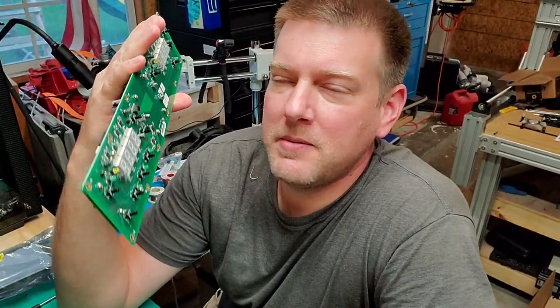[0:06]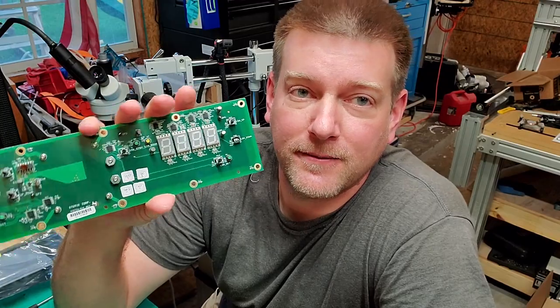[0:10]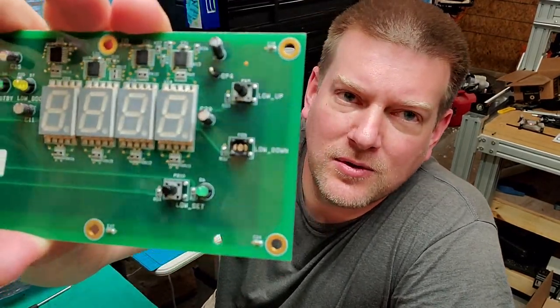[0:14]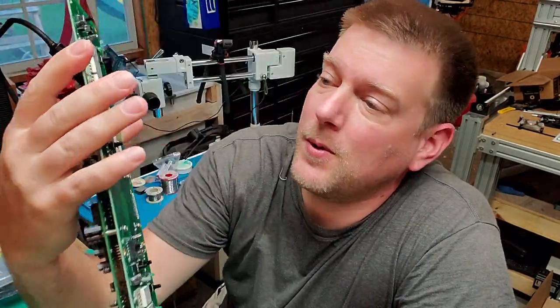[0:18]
I found a board in the bottom of a box. Unfortunately, it's had kind of a hard life. It's brand new, but it's had a hard life. See those little buttons right there? A couple of them are damaged. So, we're gonna go ahead and fix that.
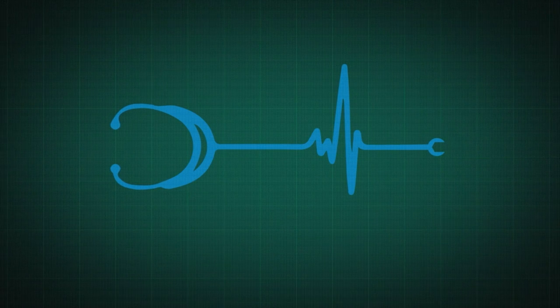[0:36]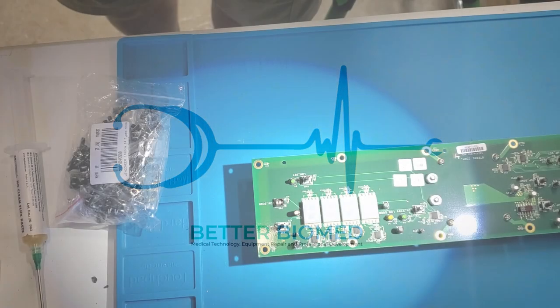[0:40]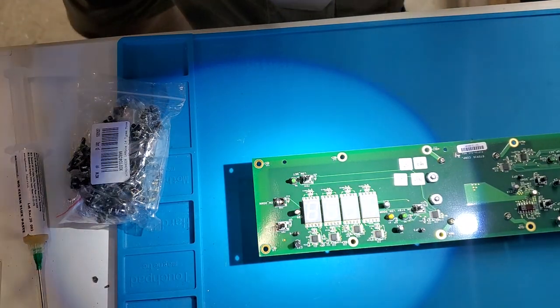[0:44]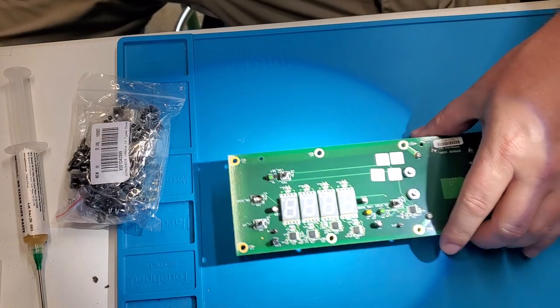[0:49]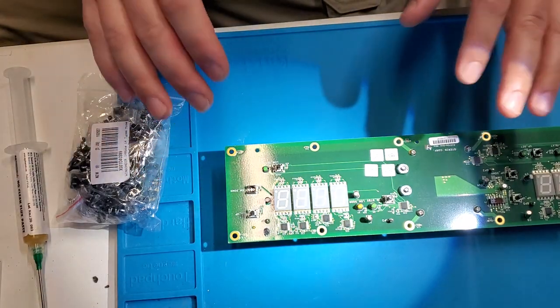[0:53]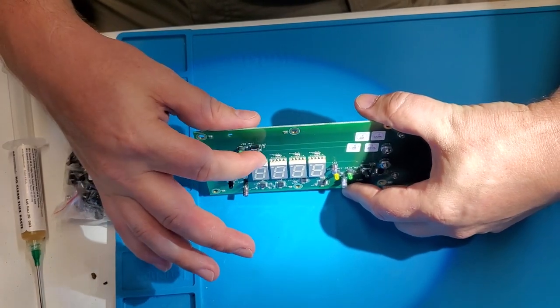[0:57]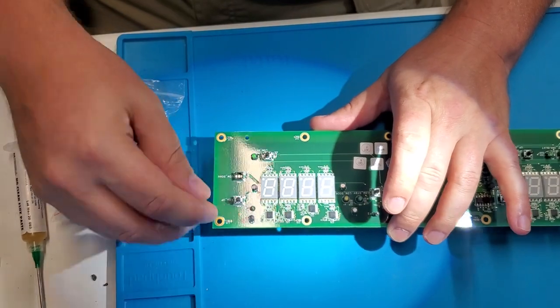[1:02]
Hey everyone, welcome back to Better Biomed. Today I'm going to go ahead and show you guys how to change out some buttons on a circuit board, because these buttons tend to get damaged all the time. There's a whole variety of different ones that you'll find on circuit boards. These ones here have a raised pedestal. It's basically your activation button. It makes them super, super gentle.
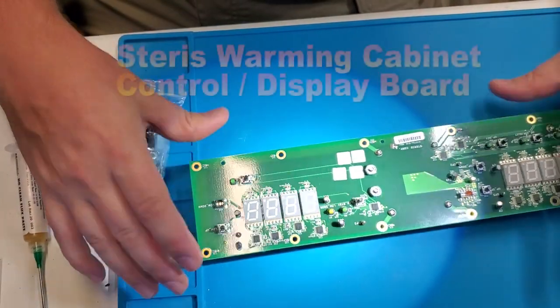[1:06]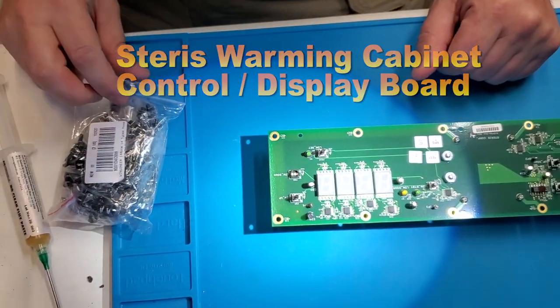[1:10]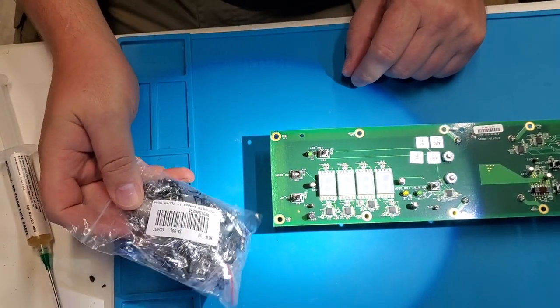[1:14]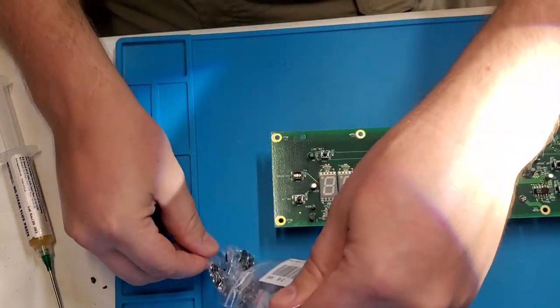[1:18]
This one was damaged in the package, brand new, and this is about a $1,000 board, and I just can't let that go. So I was able to find replacement parts off of Amazon, and I do believe that these are only $7 or $8, and it is like 140 pieces.
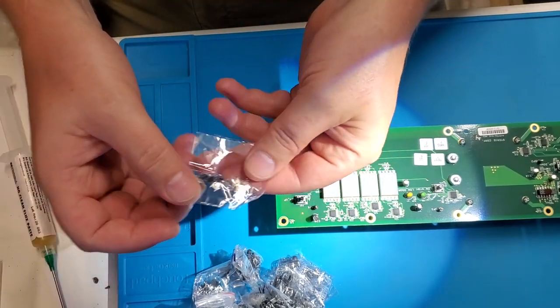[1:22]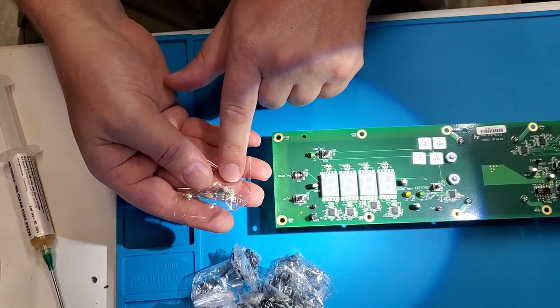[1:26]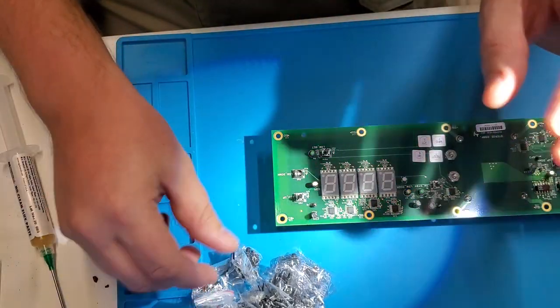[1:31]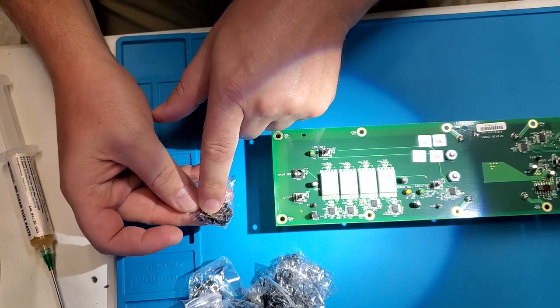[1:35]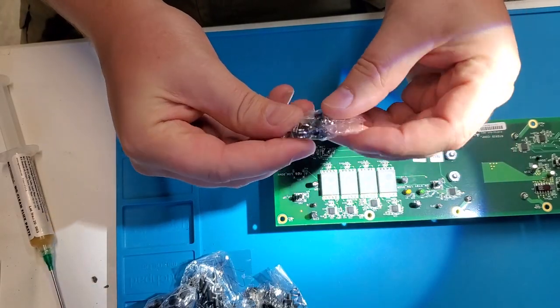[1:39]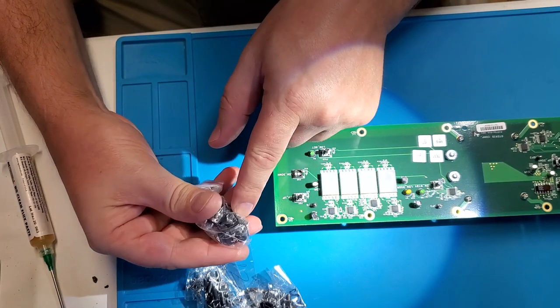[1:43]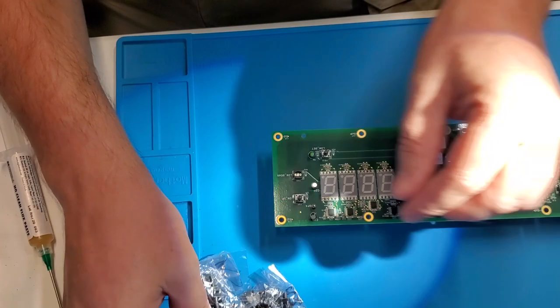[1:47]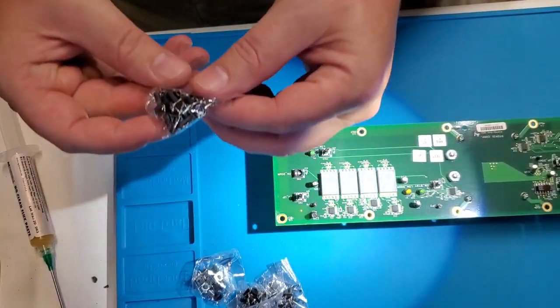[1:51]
The cool thing about this is we have a variety of different buttons. Some of these are the typical ones that you see on medical equipment. They're the flat with just a tiny, tiny raised portion. There's the low rise buttons. We've got some more low rise buttons. I've got some larger ones. We do see these as power buttons on some PCBs. Some more low-rise buttons. Probably quite a few of those.
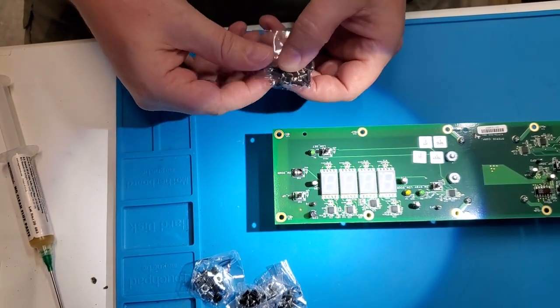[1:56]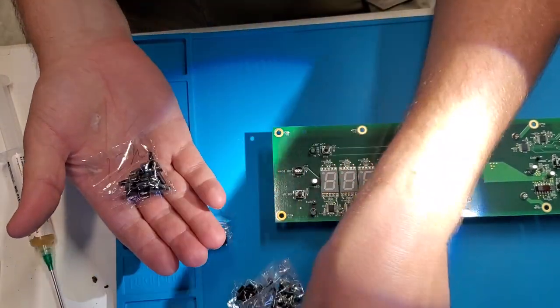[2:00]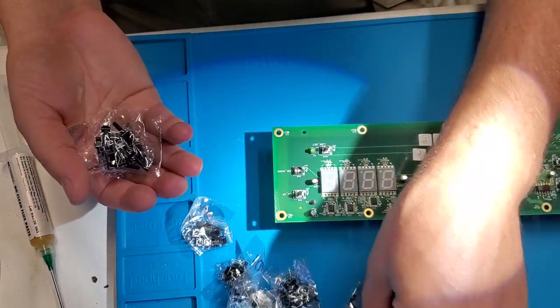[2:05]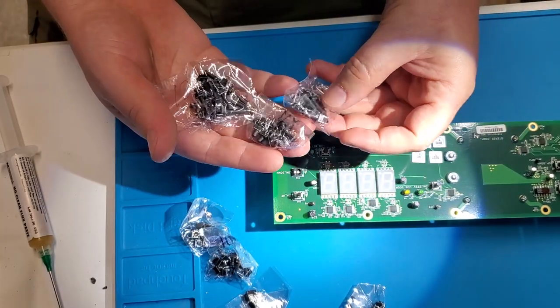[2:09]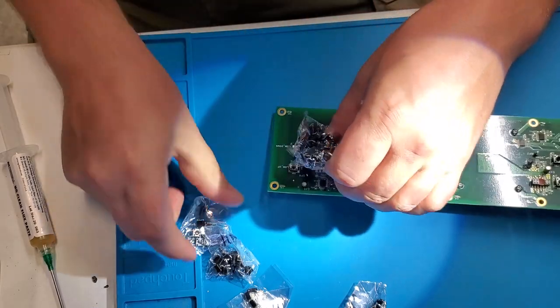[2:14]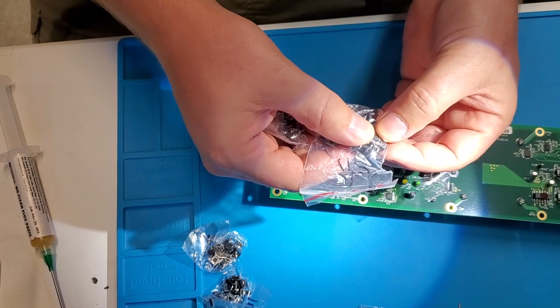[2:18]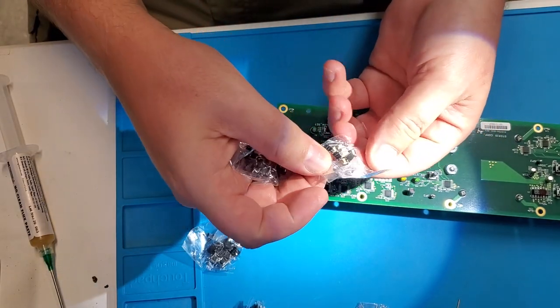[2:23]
All right, this is what I'm talking about. This looks a little closer to what I'm after. So this kit also comes with different lengths of button. Let's see, those ones are too short. Those ones are pretty long. I think it's the first one. I think it's this one. Well, let's go ahead and take a look. Those ones are pretty cool. And then these ones, I have actually seen these go bad on PCBs before. Look at those little squares.
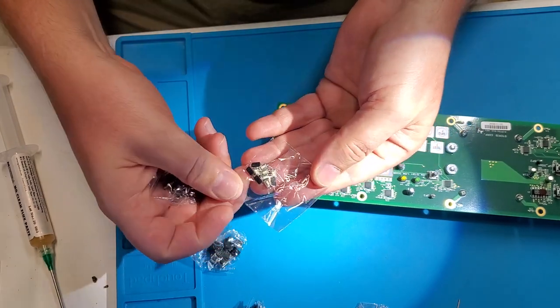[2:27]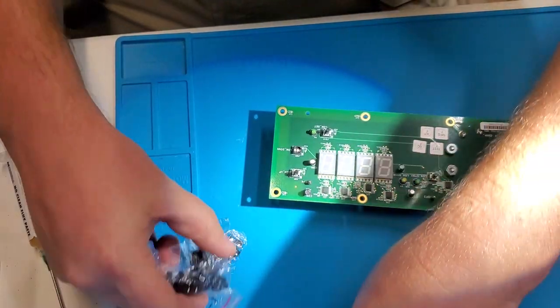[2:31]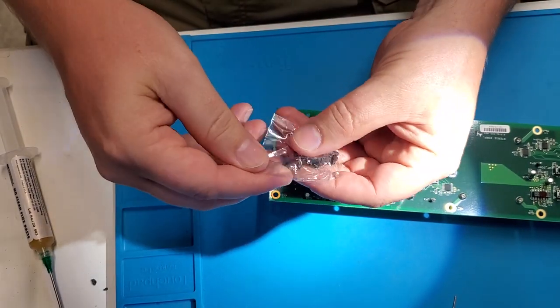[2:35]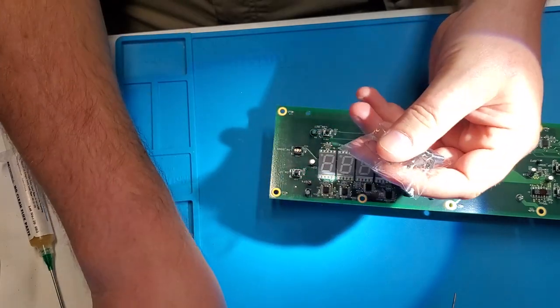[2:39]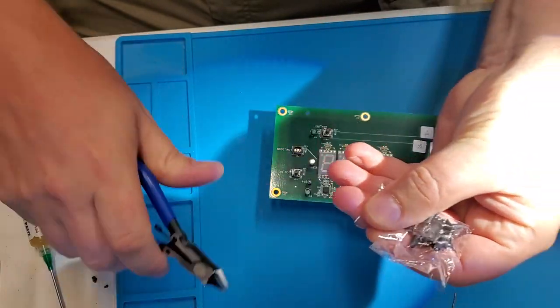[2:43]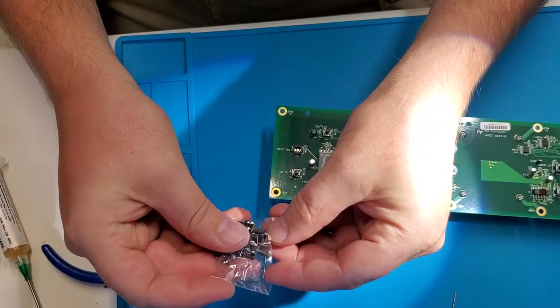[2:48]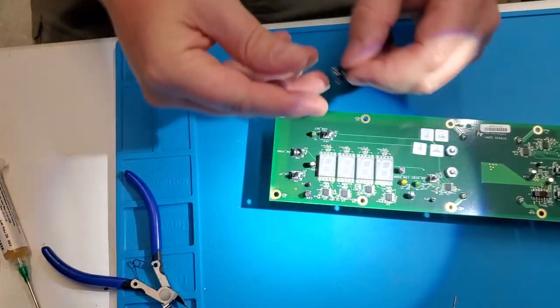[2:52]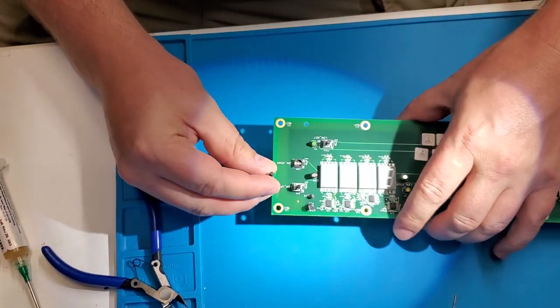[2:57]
Even if you just keep these in your parts inventory for what-ifs type of situations, I can't tell you how many times I have seen buttons go bad on PCBs, and they are actually very fixable. And I'm going to show you guys how to do that.
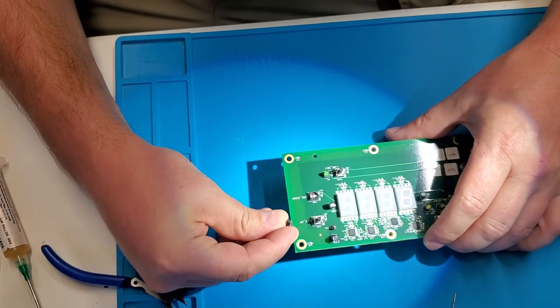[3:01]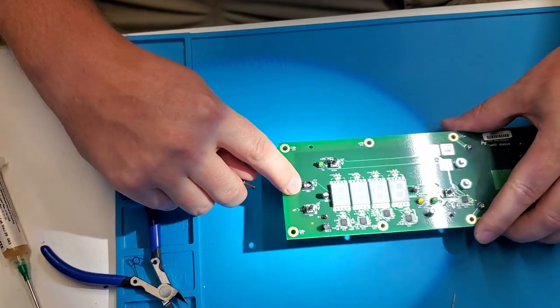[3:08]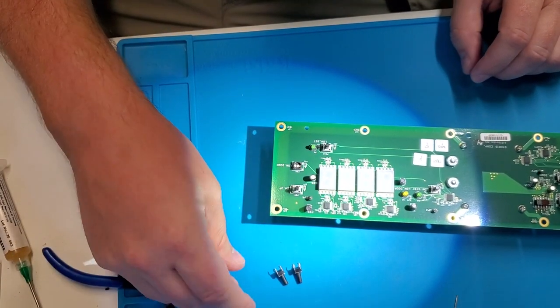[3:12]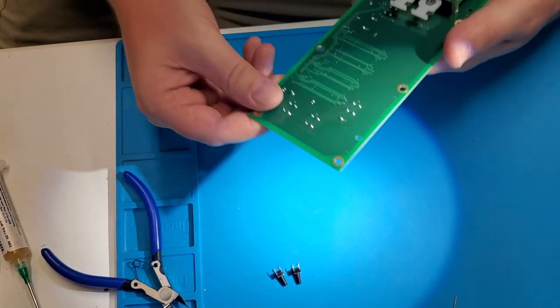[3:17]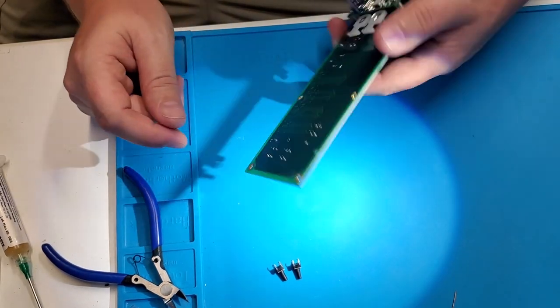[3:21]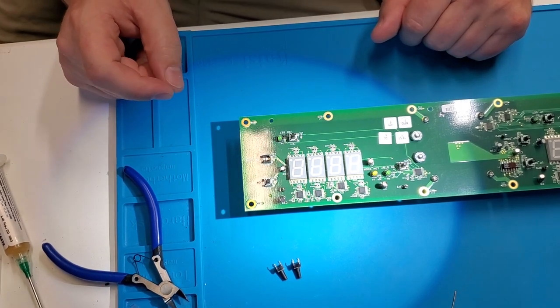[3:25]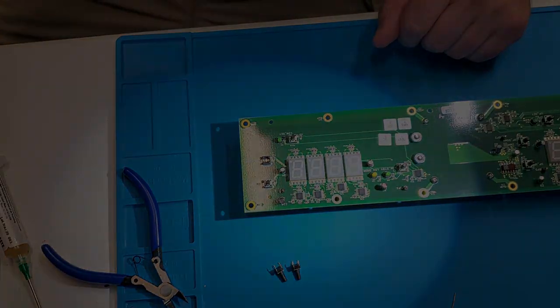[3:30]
So let's see, this one. That looks like it's it. Look at that. Excellent. Okay, so I need two of them. I need one for this guy, and I need one for this guy right here. There's one, there's two. So some of the things that you'll notice is that these ones are through hole. So we'll have to actually desolder these. And in doing so, I'm gonna have to add some solder and we'll go from there. So let's go ahead and turn the soldering iron on and get started.
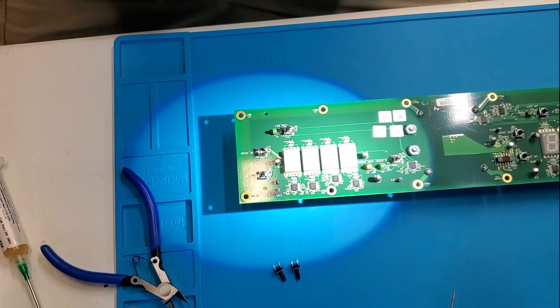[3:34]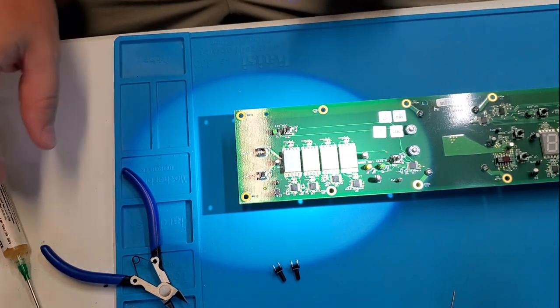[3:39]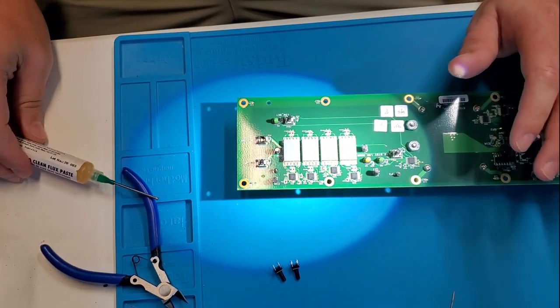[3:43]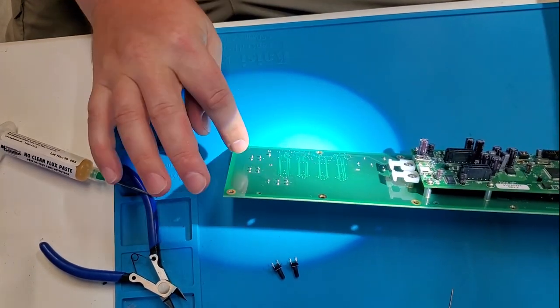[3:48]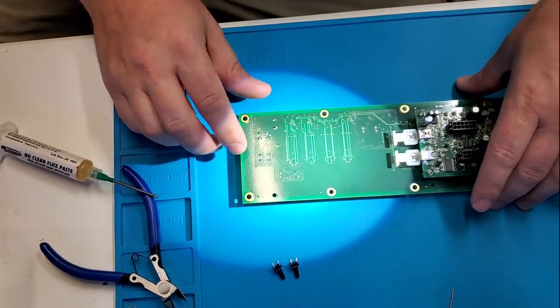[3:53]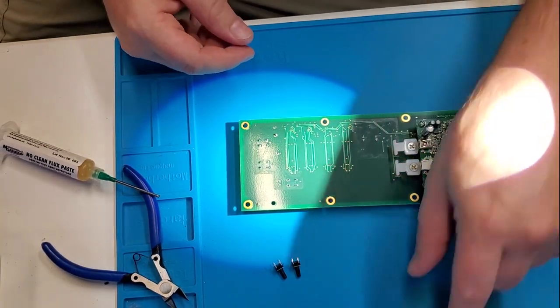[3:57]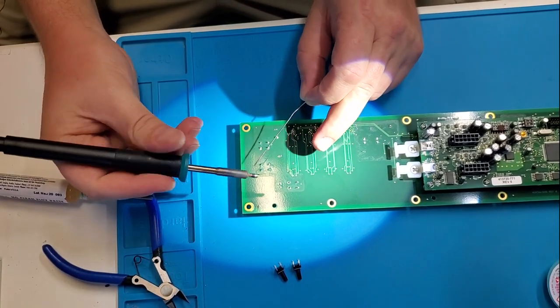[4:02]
Okay, the absolute first thing that I'm gonna do is I'm gonna go ahead and desolder these buttons. I've got my soldering iron all heated up. In order to desolder these, we're going to have to add some solder to it. A lot of these are wave soldered, and that means they use absolute minimum solder on the board. So I'm going to go ahead and flip it over. I have access to the two. It's going to be this one and this one. And we're going to add just a little bit of solder to the back. And then I'm going to be able to wick it back off. Let's do it.
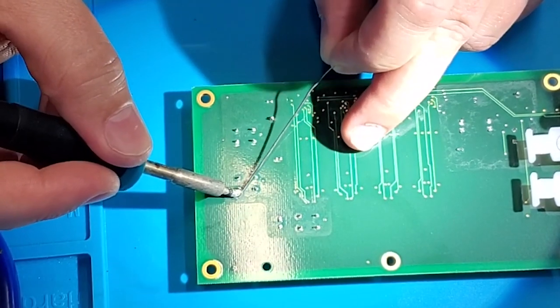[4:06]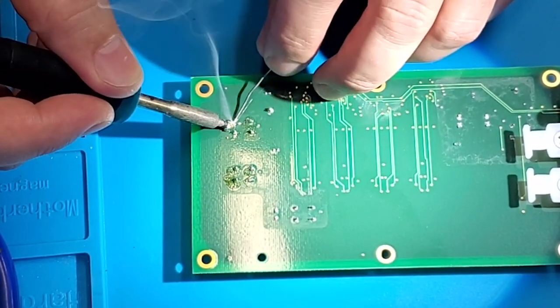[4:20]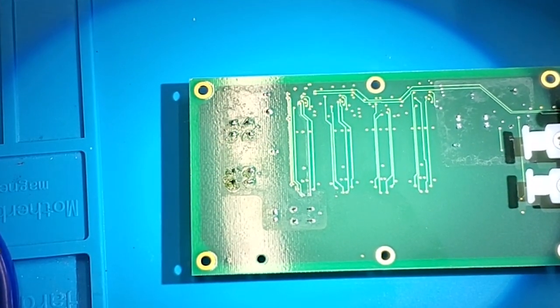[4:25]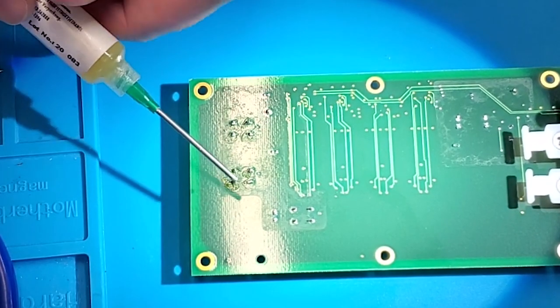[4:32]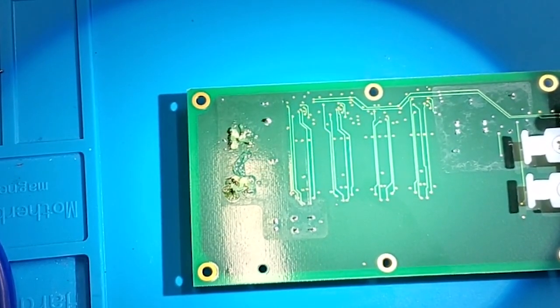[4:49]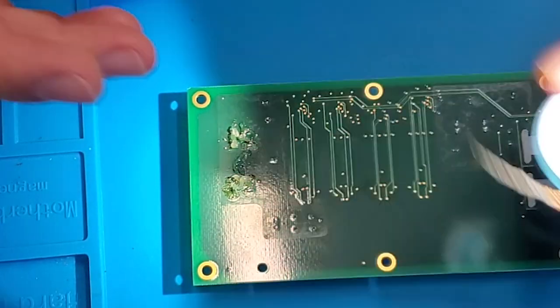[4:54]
Adding solder to the joints also acts as a preheater for the joint. All right, next. I'm going to go ahead and put some flux down here. All right, that's a good amount of flux. And I've got my solder wick ready. I'm gonna use the thicker braid solder wick, stuff right here.
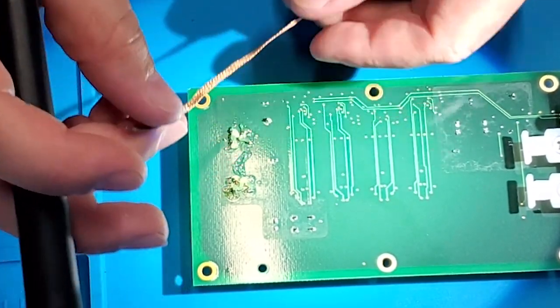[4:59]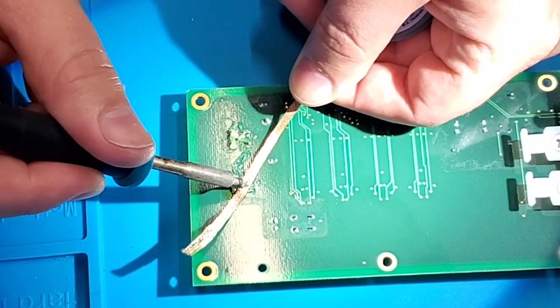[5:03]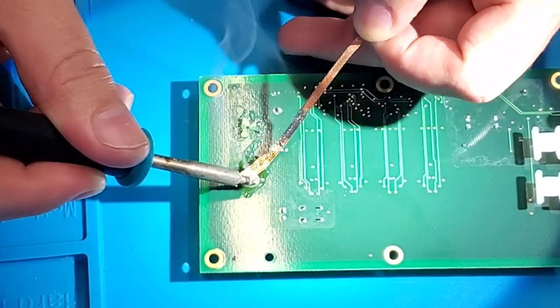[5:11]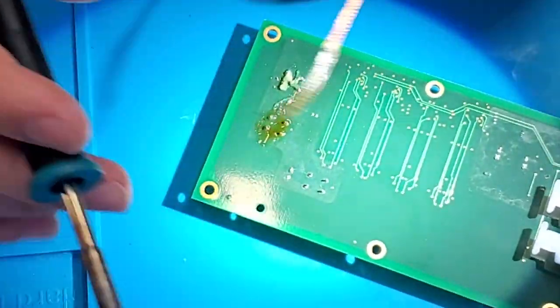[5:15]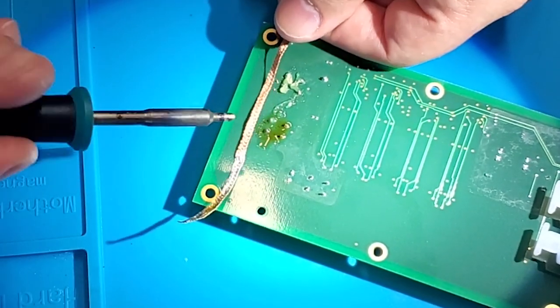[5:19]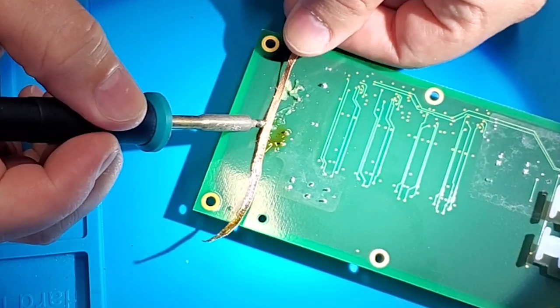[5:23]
And I'm gonna lay it right down next to the joints, heated up with the iron. You can see, oh, look at it bleeding out real quick. That's the beauty of using lots of flux with solder wicking. Look at that. Got those ones already cleaned up. So all I'm doing is I'm placing the solder wick down next to the joints, kind of touching the iron up next to it, and you can see my technique is to pull the solder wick towards me.
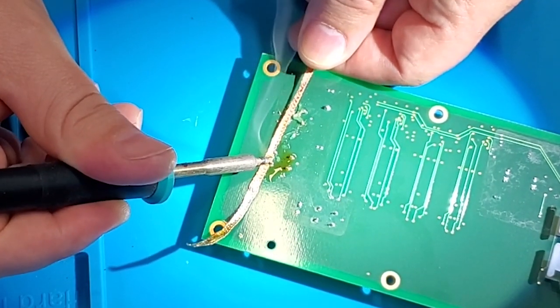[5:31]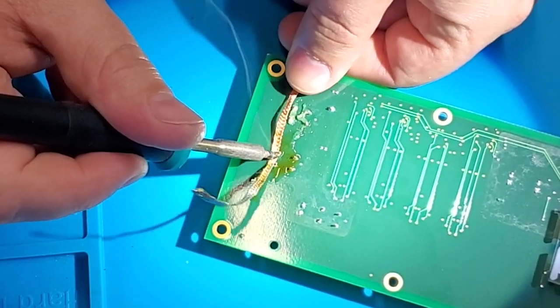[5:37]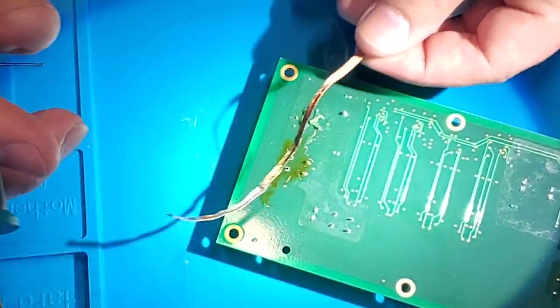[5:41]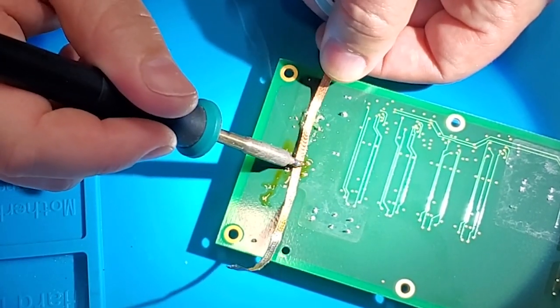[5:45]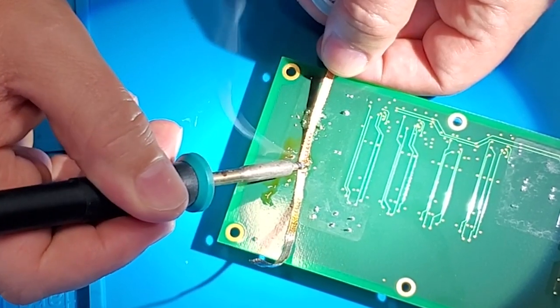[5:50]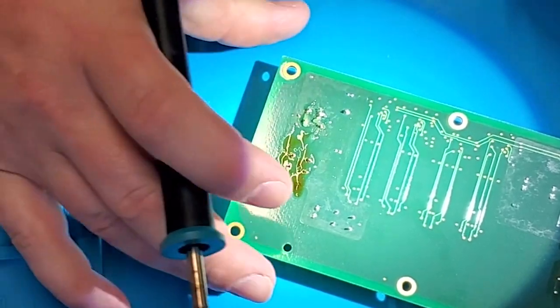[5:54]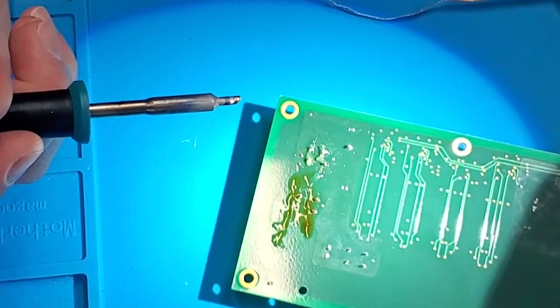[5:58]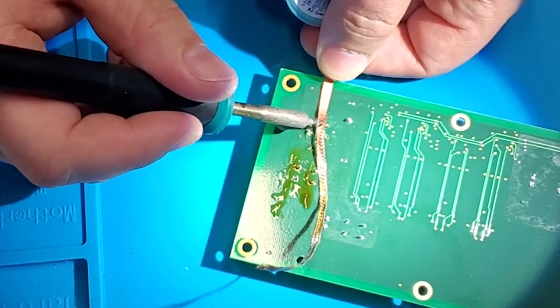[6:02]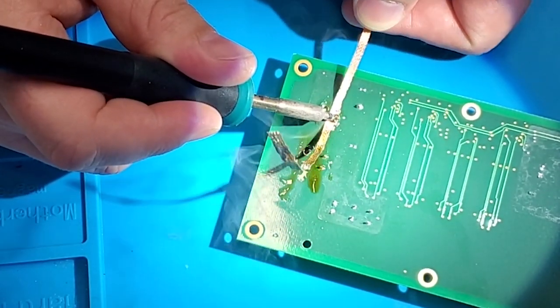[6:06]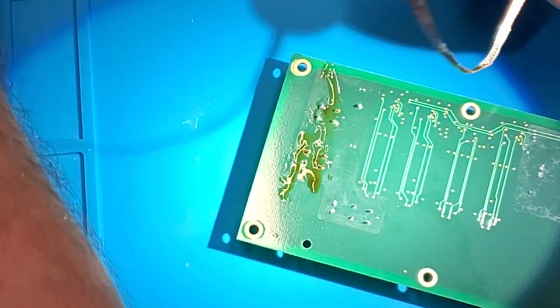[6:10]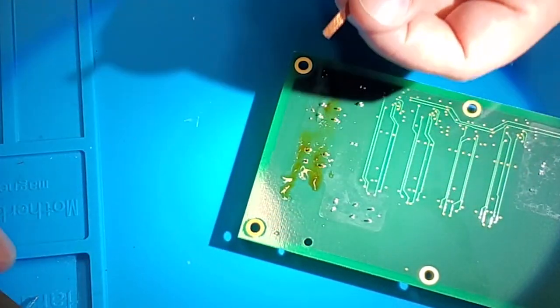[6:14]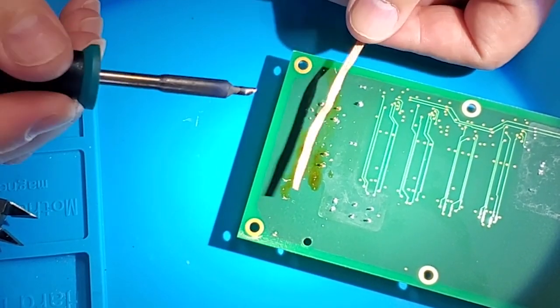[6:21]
That's how we do it. All right, those look like some pretty clean joints. Here we go. That's looking really good. How clean that comes out, nice and easy. And once you've used up your solder wick, you just clip it, start anew. There we go.
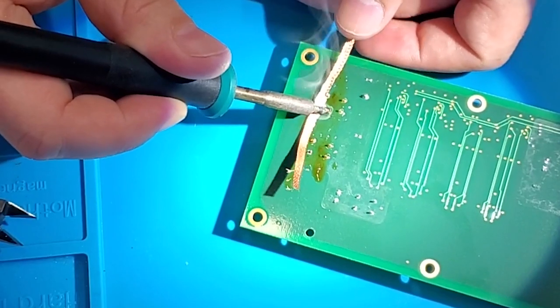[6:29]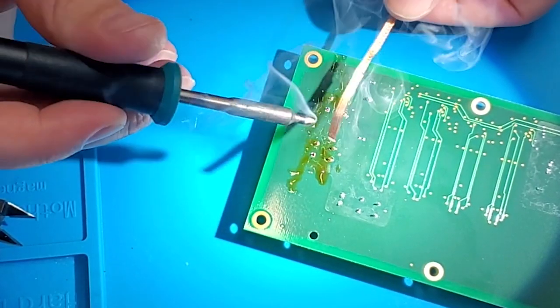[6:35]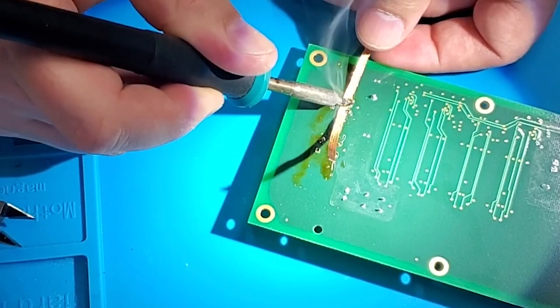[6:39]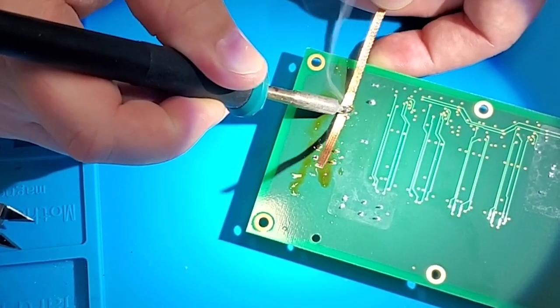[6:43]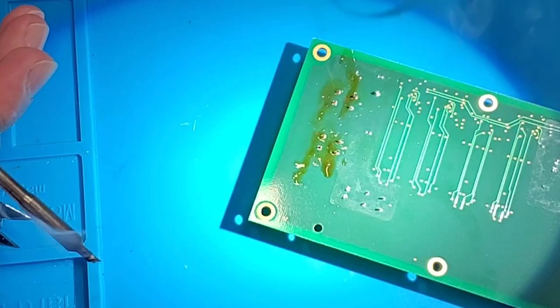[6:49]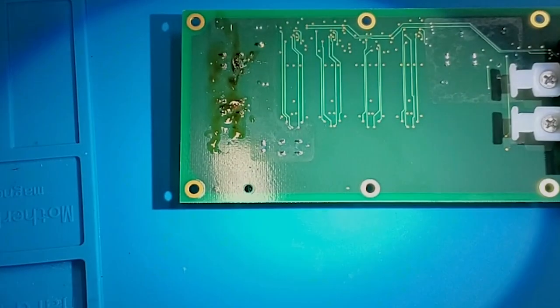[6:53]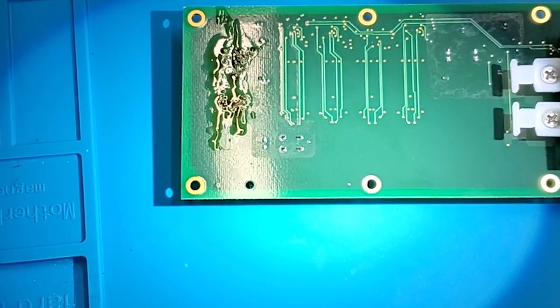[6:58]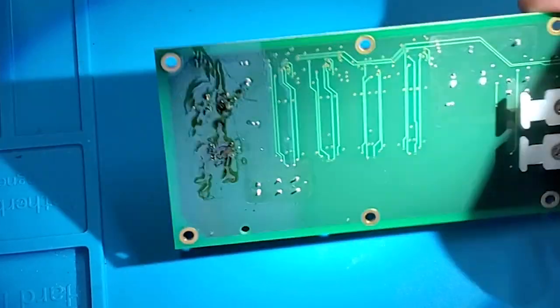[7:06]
These joints are looking really clean. So now I got most all the solder out of there, I'm going to do just one thing. I'm going to heat it up with my hot air station and just get the backs of these joints so I know that they come out nice and clean, and it should just pop right off.
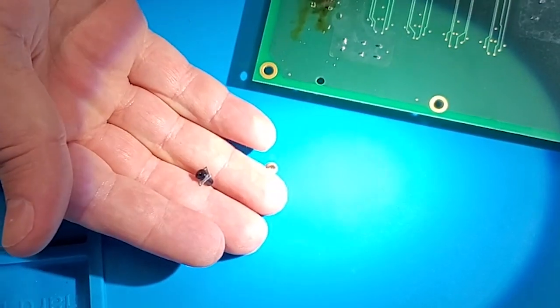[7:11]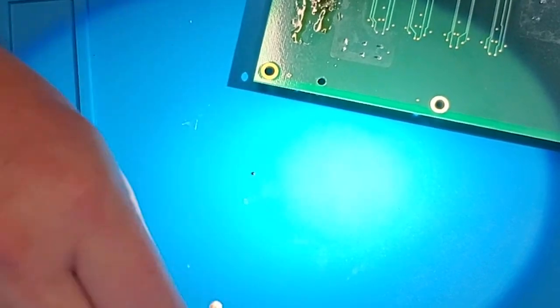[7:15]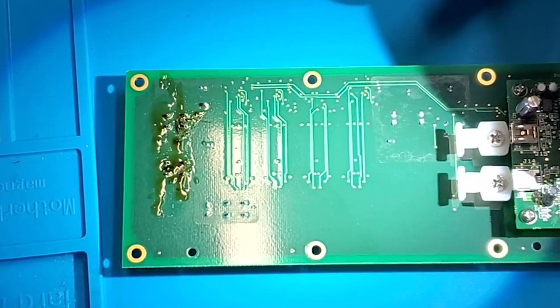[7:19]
You can see my buttons are disintegrating. That's not due to the heat from the iron, that's actually because I had kind of put that button back together by hand. It was absolute garbage, so that's why I'm changing them out.
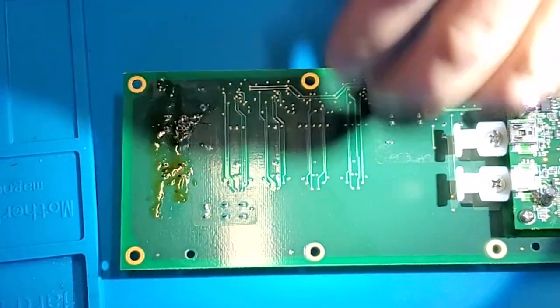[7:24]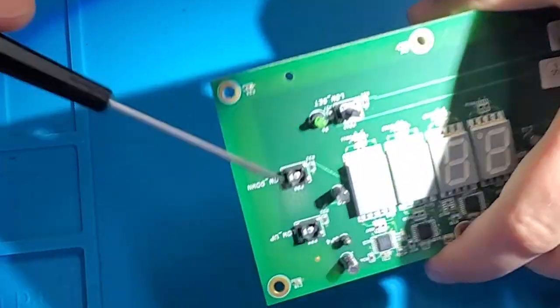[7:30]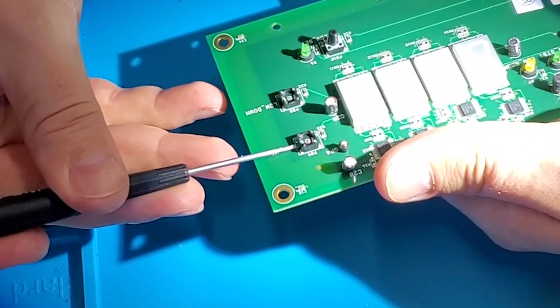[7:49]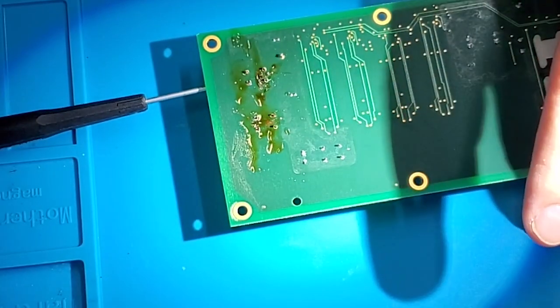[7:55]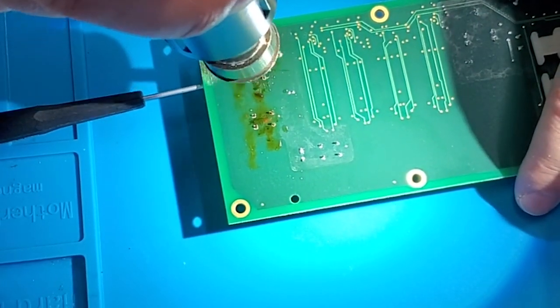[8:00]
One of the techniques I'm going to use is underneath these existing buttons, there's a little tiny lip, and I can shove a flat blade screwdriver under that tiny lip, and that gives me a little bit of tactile feedback for when it's ready to come out of the socket. Right there. Yep, it fits in nice and easy. I'll just go ahead and put that guy like that. Use that hot air station. Should fall right out.
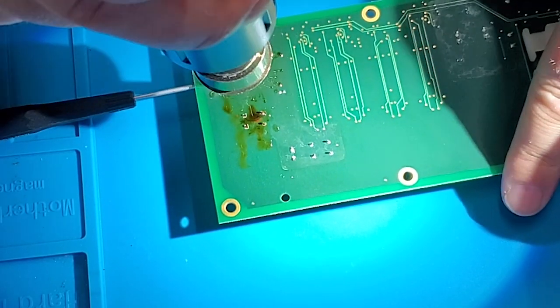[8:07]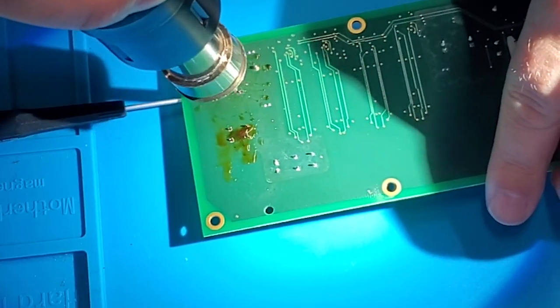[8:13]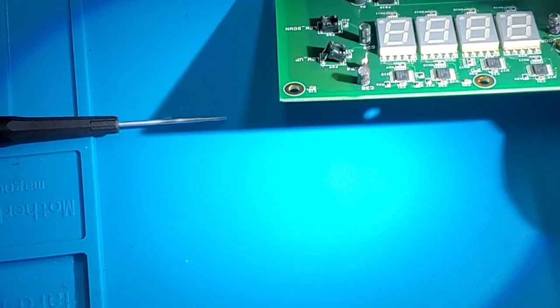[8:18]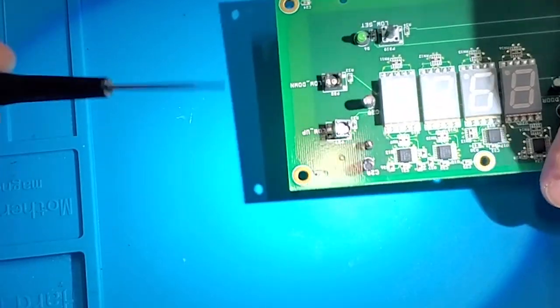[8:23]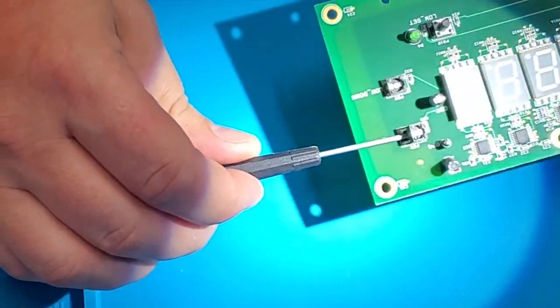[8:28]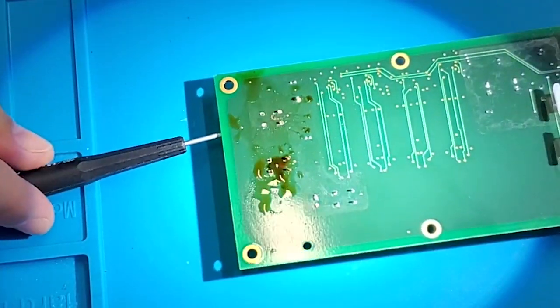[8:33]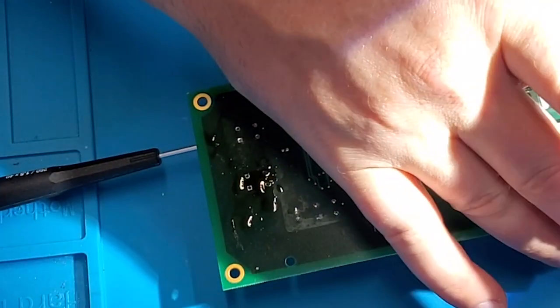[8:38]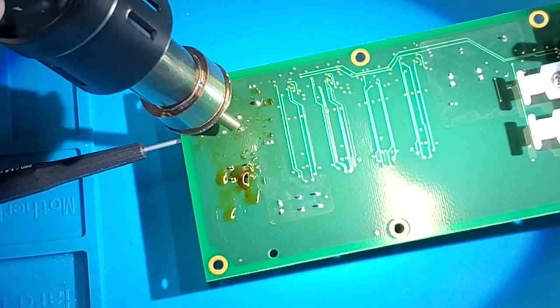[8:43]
Okay. See what happened? It pulled that up a little bit. I'm gonna place the little tiny screwdriver under the other side and flip it over, and it's kind of creating this teeter-totter effect like this. That's why I'm lifting it up just slightly. I'm using the weight of the board to force down the micro switch. I'm not pulling on it. I'm just using nice slight force. And you just kind of feel it pop out, just like right there.
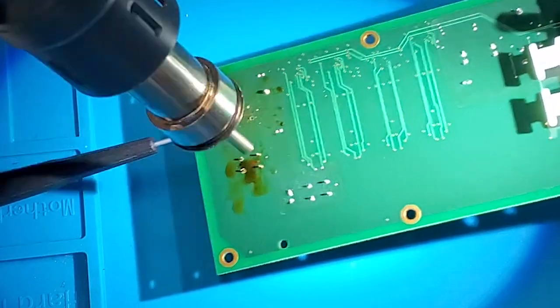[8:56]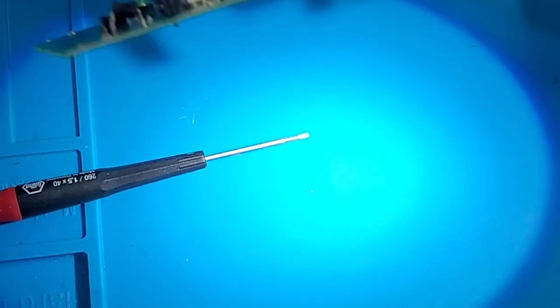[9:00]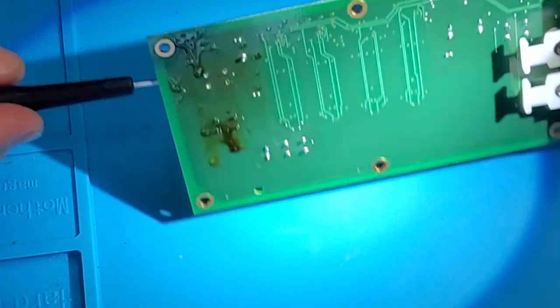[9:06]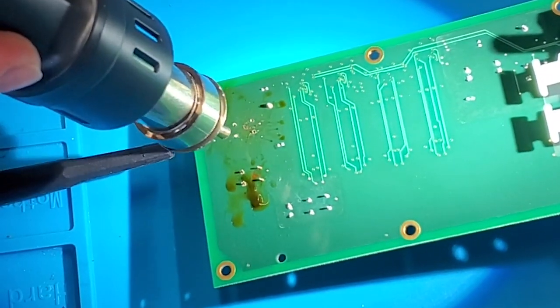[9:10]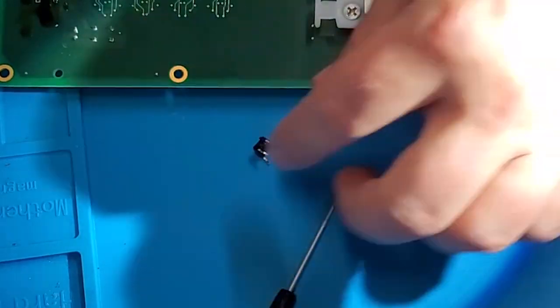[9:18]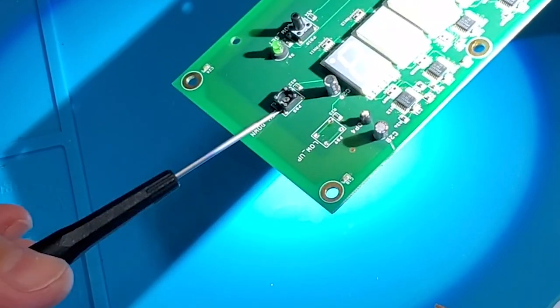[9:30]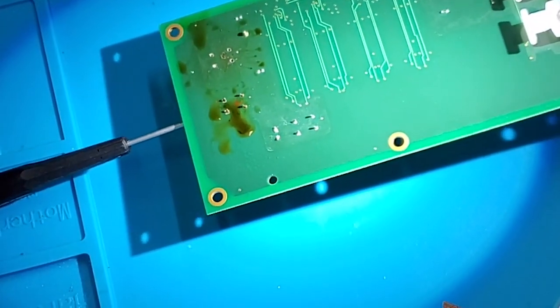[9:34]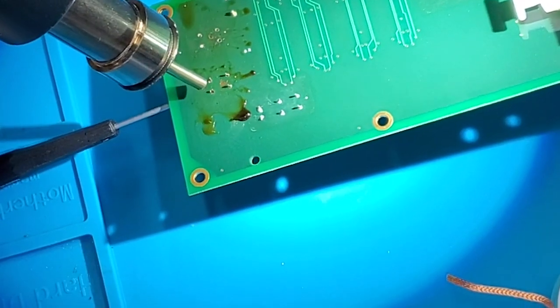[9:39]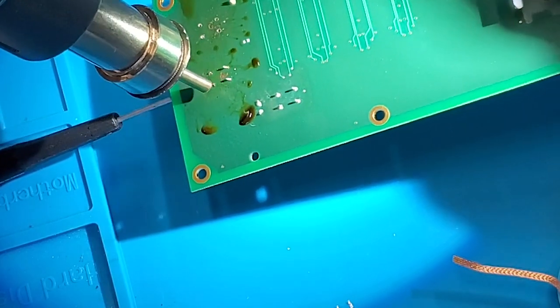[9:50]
All right. Well, that one popped out. Use the technique on the next button. Same thing. I'll place the miniature screwdriver right under the lip. Use the weight of the board on the screwdriver. I'm not forcing it. You can just kind of hear it let go once the solder moltens. There it goes, you can hear it.
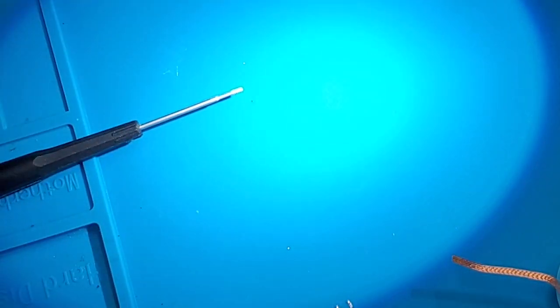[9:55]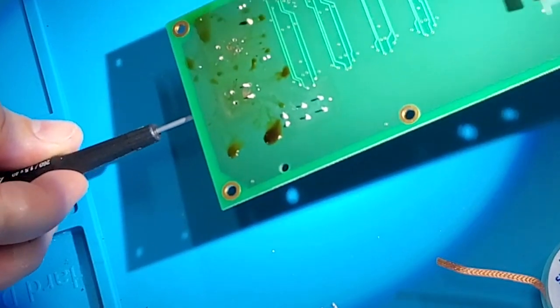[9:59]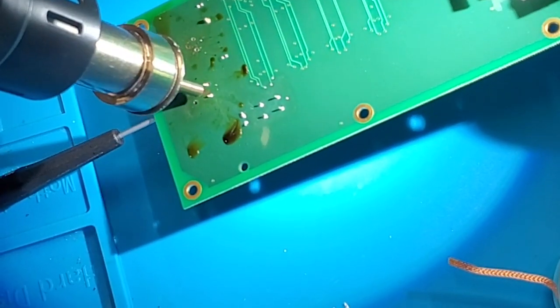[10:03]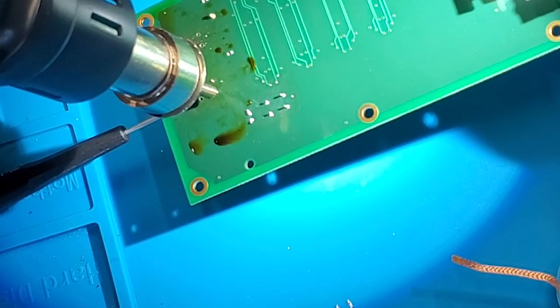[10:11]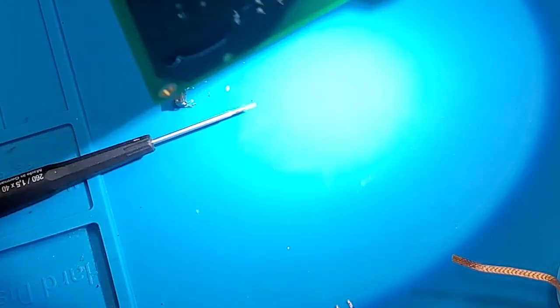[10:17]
All right. Shove it in on the other side. Heat up the other side. You can hear it creaking. That's when it's starting to let up. It's ready to go. There it goes. All right, both micro switches are out.
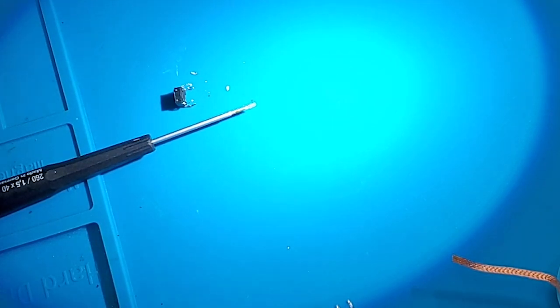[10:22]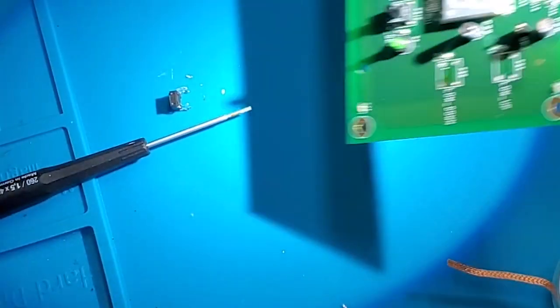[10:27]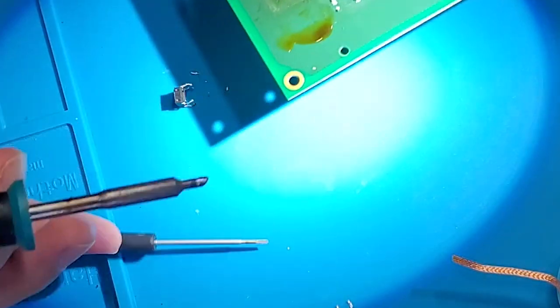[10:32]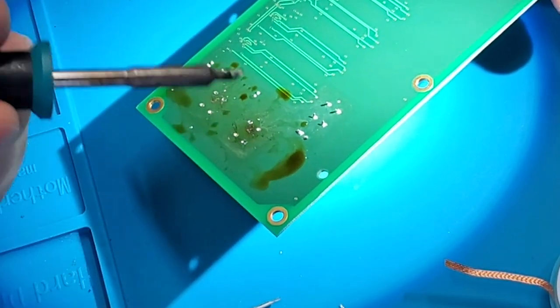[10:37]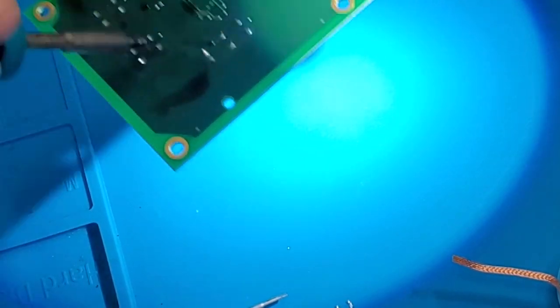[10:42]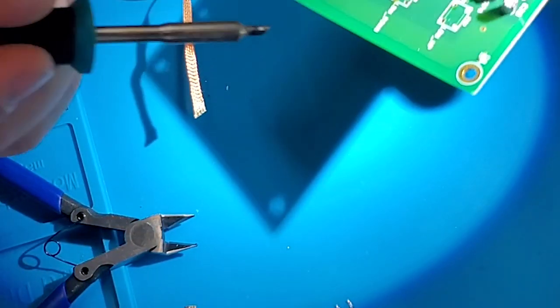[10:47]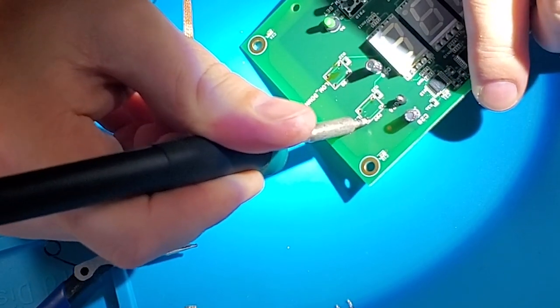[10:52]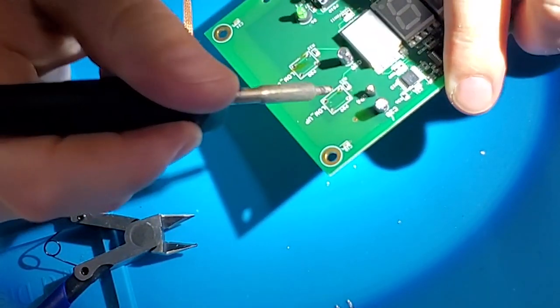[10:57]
Now what do you do about the dirty holes? For the dirty holes, I go back to using the soldering iron. And what I'm gonna do, let me clear some of this out of the way. What I'm gonna do is I'm gonna heat up the hole with the soldering iron, and then I'm gonna blast it out with regular air. Just like this, ready? Clean. Let's try this one. Clean.
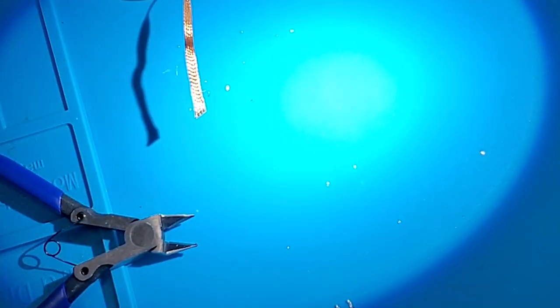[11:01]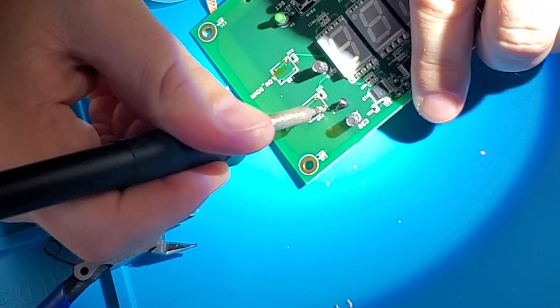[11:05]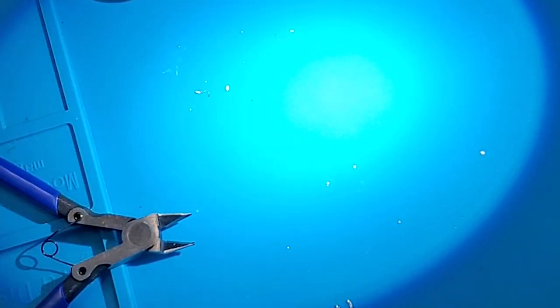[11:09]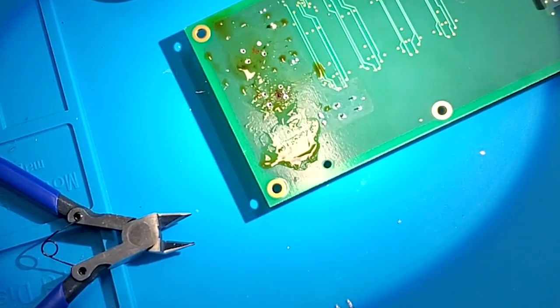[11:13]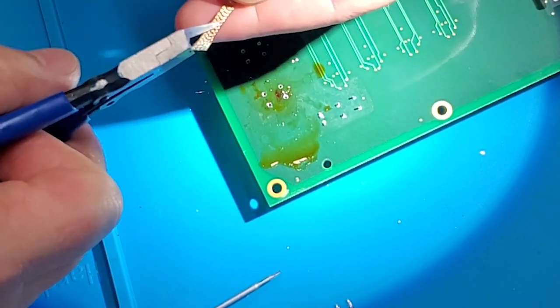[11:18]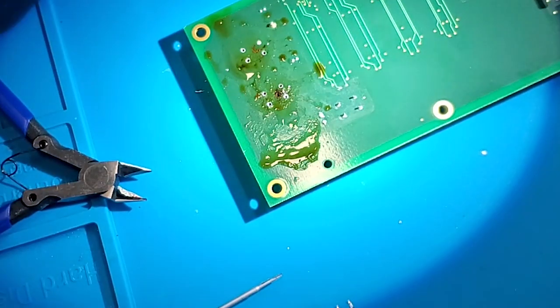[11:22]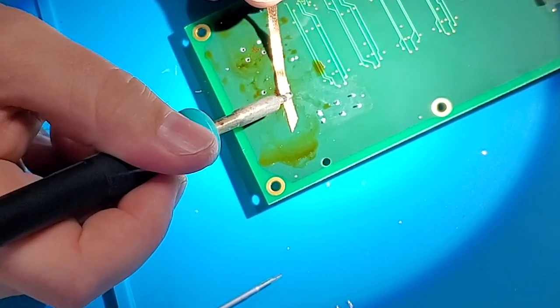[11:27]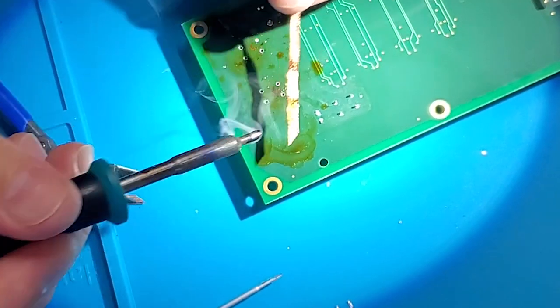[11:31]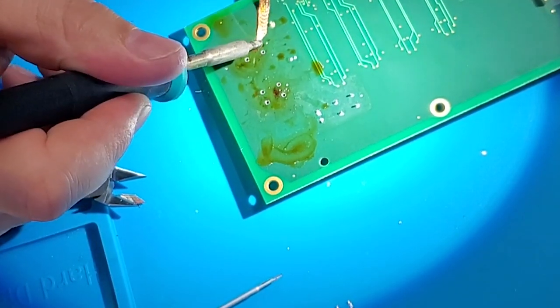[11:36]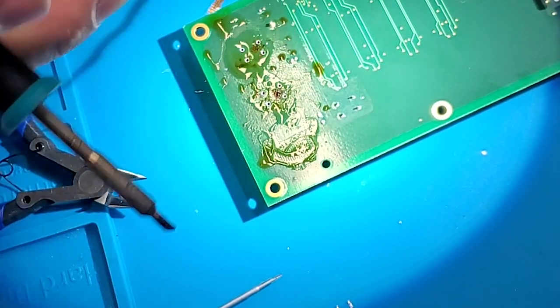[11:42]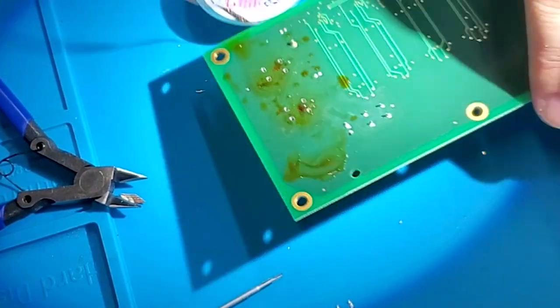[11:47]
Let's go ahead and you see how I'm clipping my solder wick at a really sharp angle? That allows me to get the point down in the hole. So all I gotta do is touch it a little bit with the soldering iron. It just cleans it right up. See, right there. There you go. It shows you how easy it is. And then if I need to refresh my point, just clip it at an angle again. Get a little bit of flux on it, stick it down the hole, and you're good.
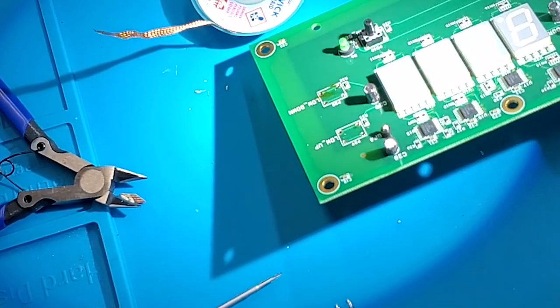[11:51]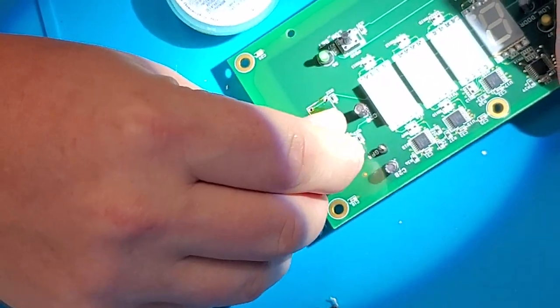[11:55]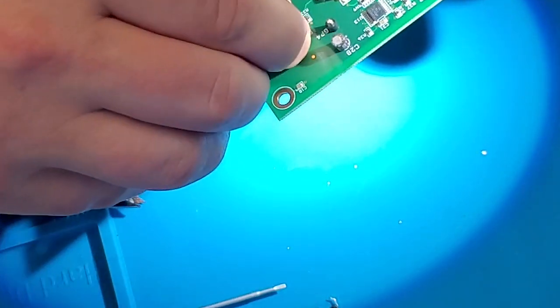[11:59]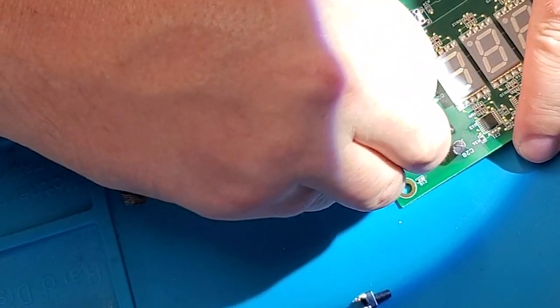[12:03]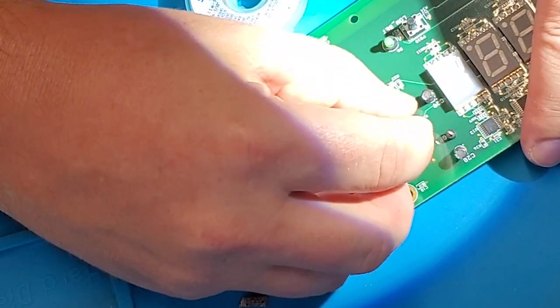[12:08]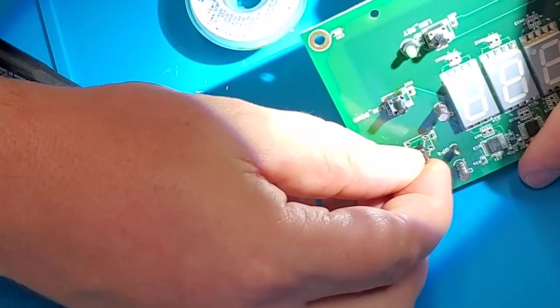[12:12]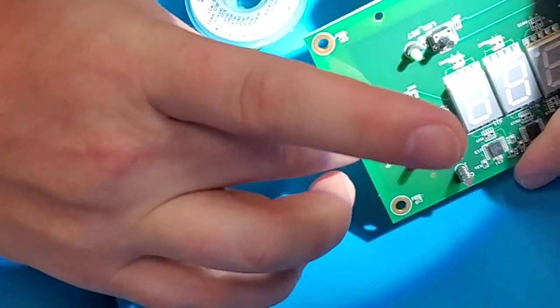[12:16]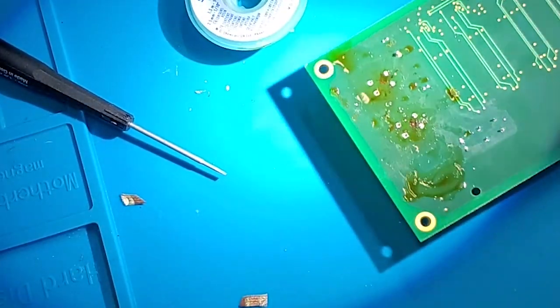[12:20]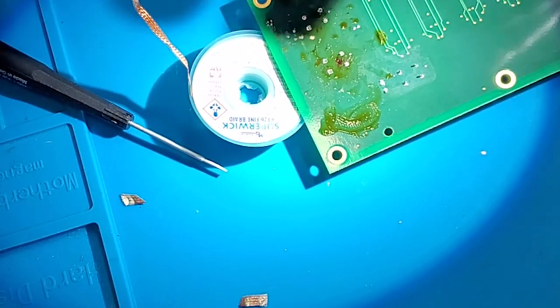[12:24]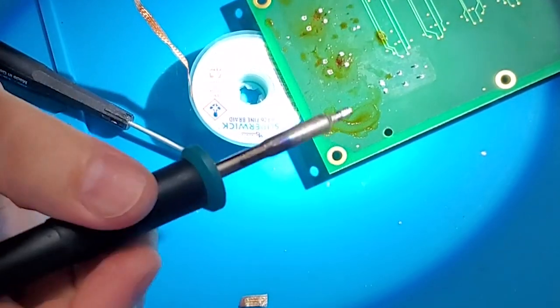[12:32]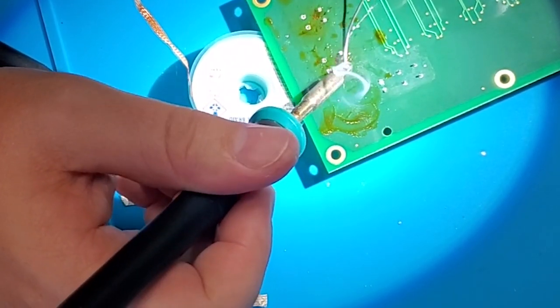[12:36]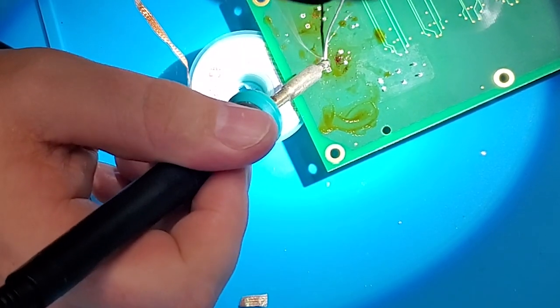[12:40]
All right, so now the replacement of these. I'm gonna go ahead and make sure that all the legs line up with the holes. Okay. Excellent. You can see how they just kind of snap in. Now all I gotta do is flip it over. I'm gonna elevate the board a little bit on my solder wick so it's not pressing down on those buttons. Get this guy out. I have some lead-free solder here because the rest of the board is lead-free. You can see that this actually goes quite quickly from here.
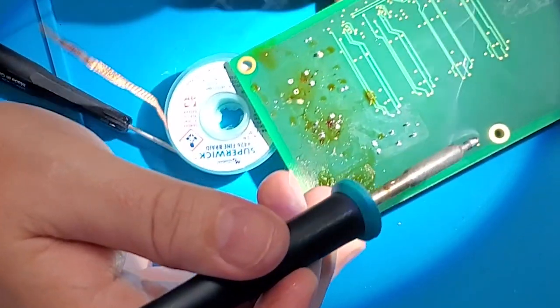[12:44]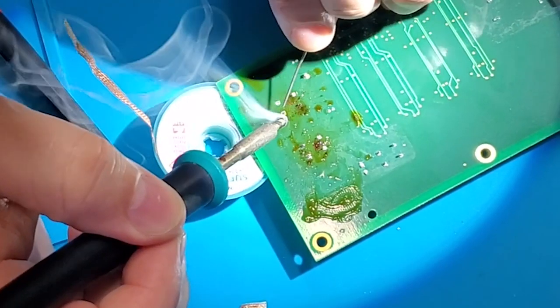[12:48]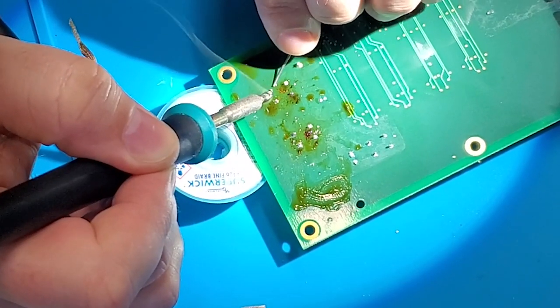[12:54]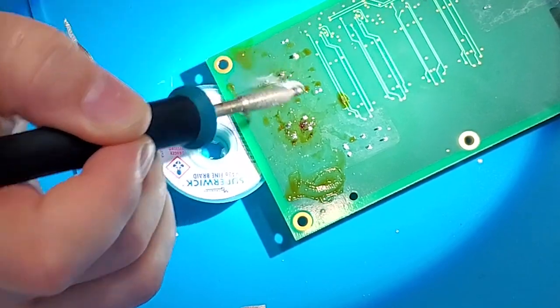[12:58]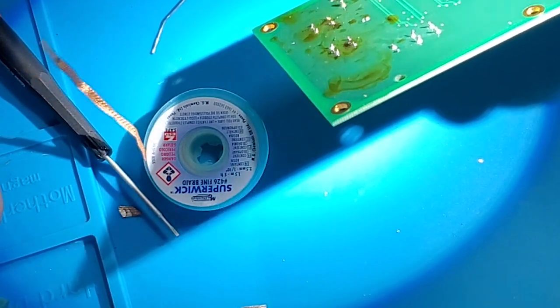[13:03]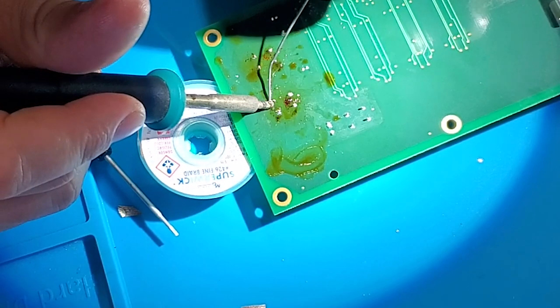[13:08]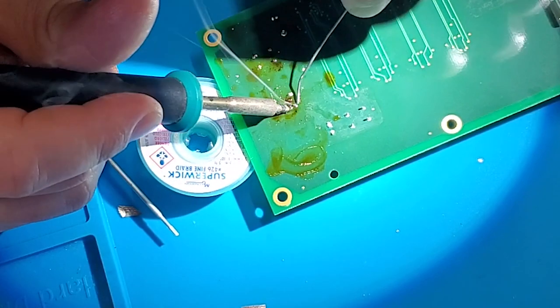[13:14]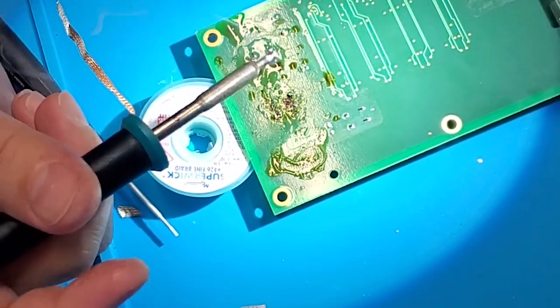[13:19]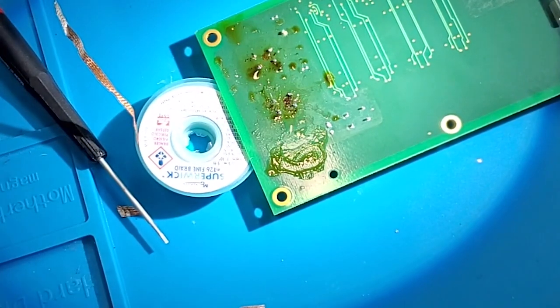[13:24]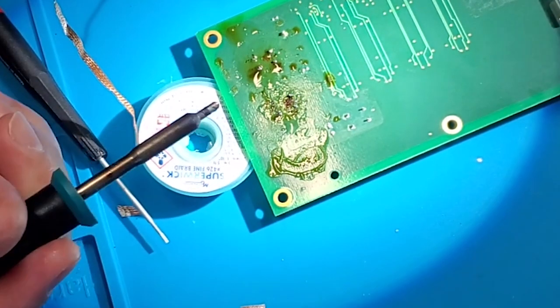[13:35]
All right, that's looking excellent. So give it another check, make sure all those are looking good. All right, when I'm placing these buttons in, you can see I've got the half circle that's shaved off. It's a slanted oval, I guess you can call it. And this guy can hold solder on the tip much better than the conical tips. And that's why I use it. Plus, it has a lot more heat down near the tip.
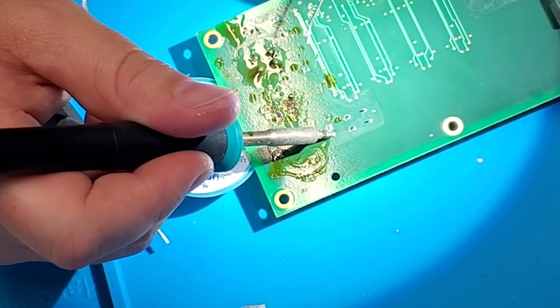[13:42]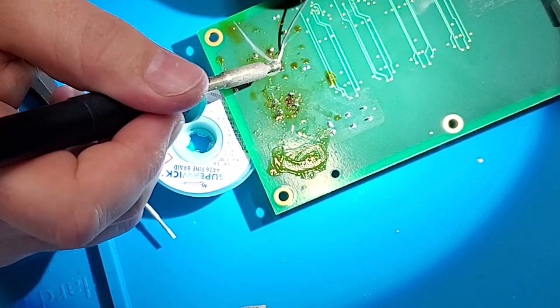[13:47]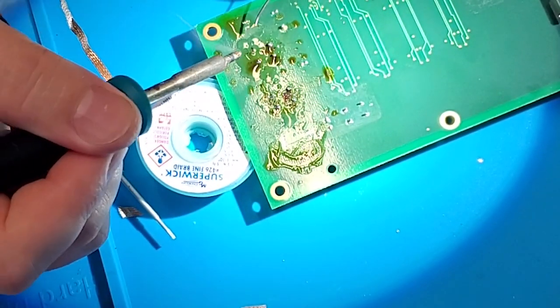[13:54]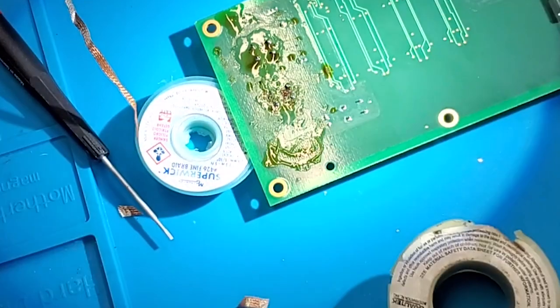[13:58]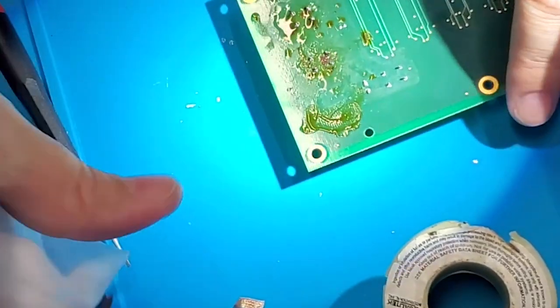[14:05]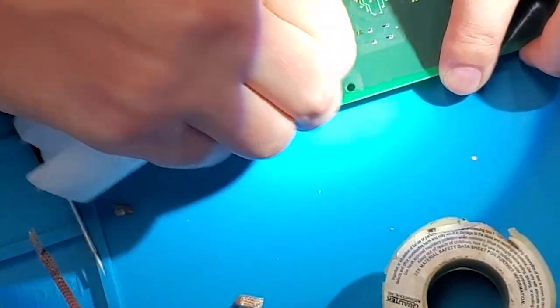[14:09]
And what I'm doing is I'm placing it down next to the component, and it heats up the socket, because that's the trick. You want to heat up the socket, not heat up the solder. So I place it down on the socket, feed some solder into it, and then it forms its own natural cone. It's beautiful. Look at that. All right. So now I have a whole bunch of flux on the board, and all you gotta do is take some alcohol and you can get rid of the flux, right?
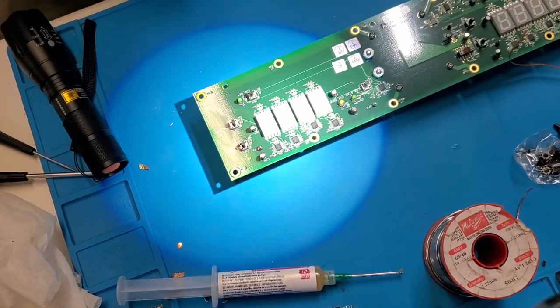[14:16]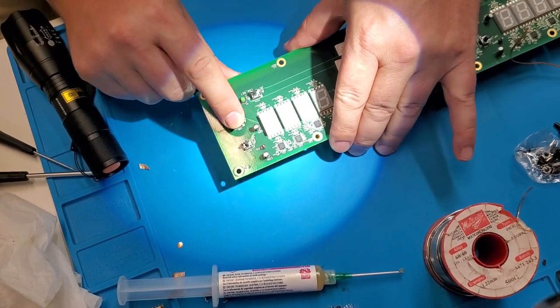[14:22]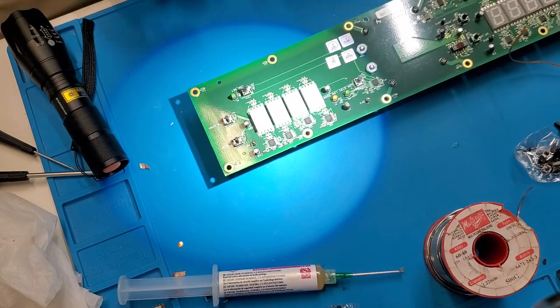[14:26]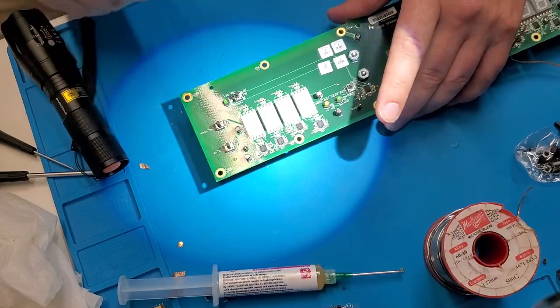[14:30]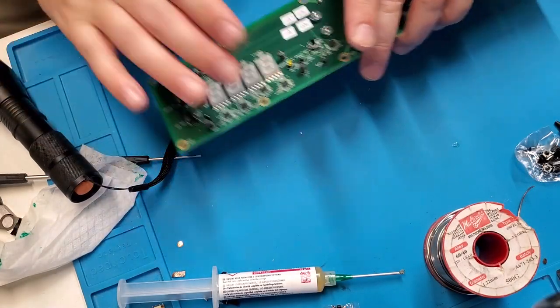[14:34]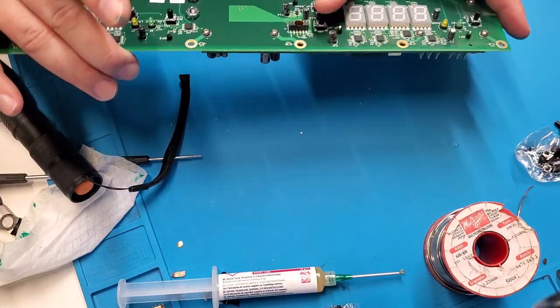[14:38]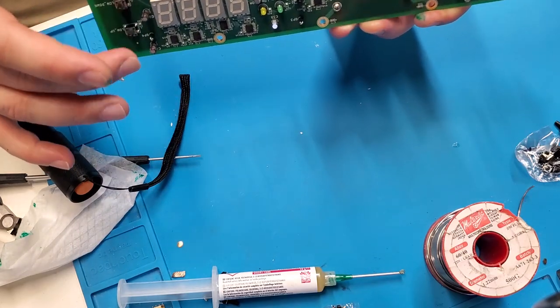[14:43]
All right, guys, I went ahead and cleaned it up with some alcohol, and now the buttons are in their place. They look like they're the exact right height. Got a little bit more snap action than the original ones. It's interesting, but they do work really well. Here's my new buttons. Make sure all the rest of them are good so I don't have to remove any of those. All right, those all look excellent.
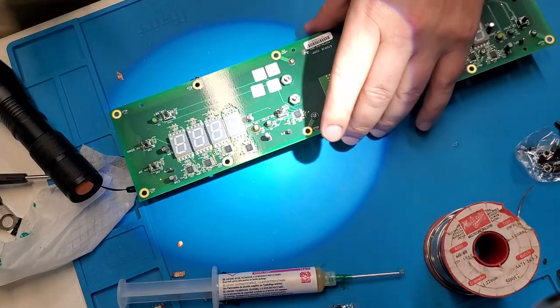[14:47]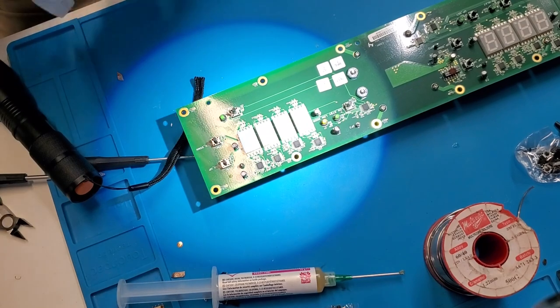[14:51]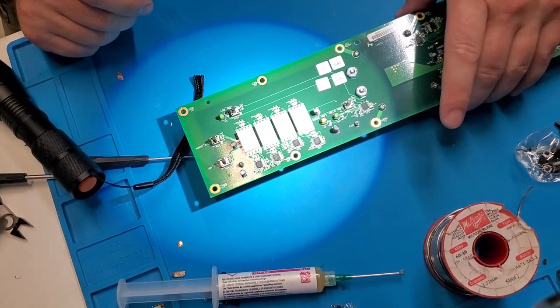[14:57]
Okay, guys. Well, there you have it. Replacing buttons on a board. And I even took an extra step of doing a UV solder mask. And this one is ready to go. We can pop it on and it's ready for use.